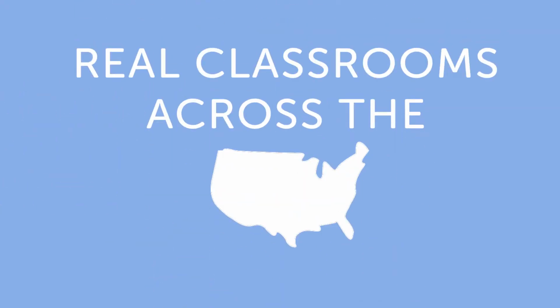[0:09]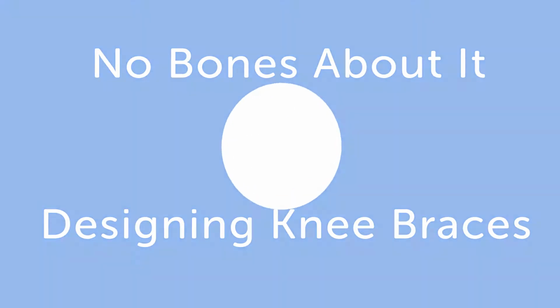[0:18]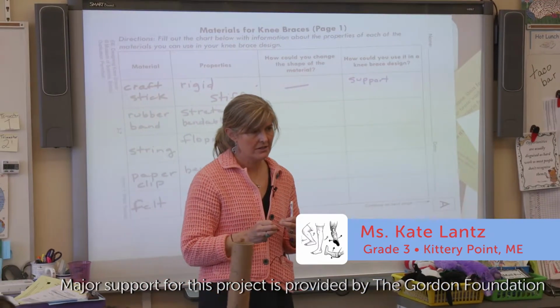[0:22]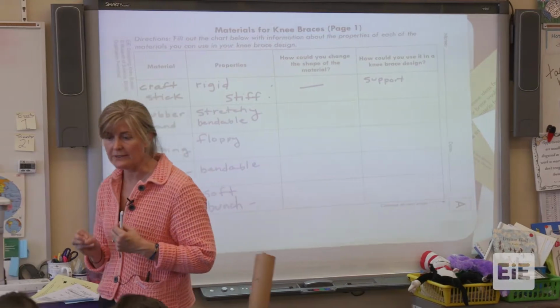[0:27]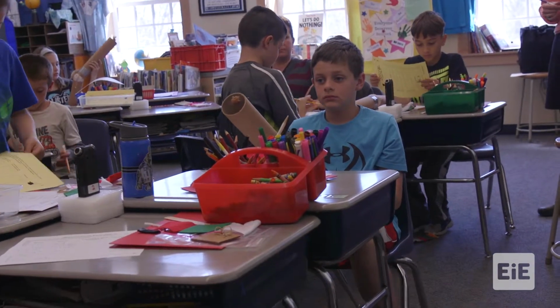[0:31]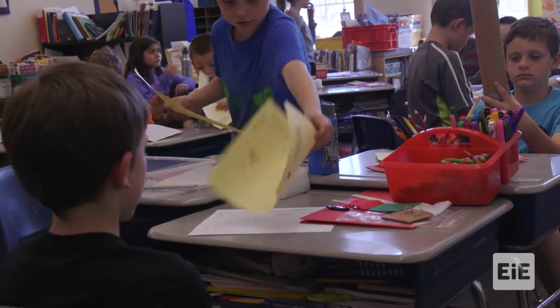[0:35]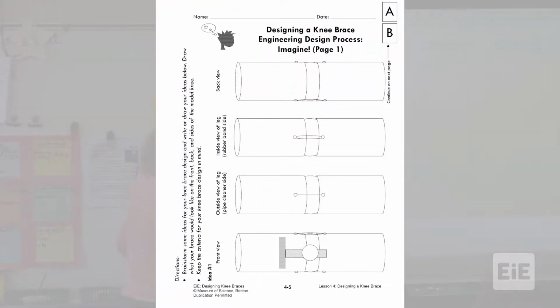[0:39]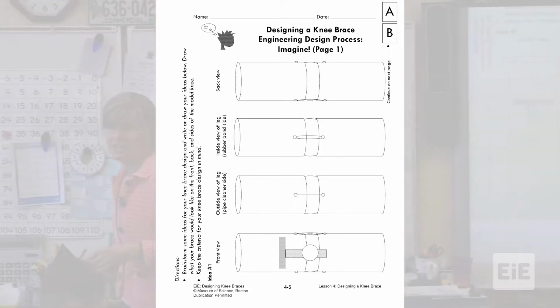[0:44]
We're on to the drawing part of our design. We are not yet at the building part of our design. We've been doing group work and teamwork, and you guys have been doing dynamite, but right now we're going to change it up a little bit. You have this in your bucket. You're going to see different angles of the injured knee.
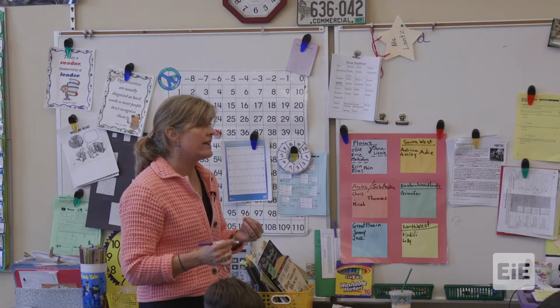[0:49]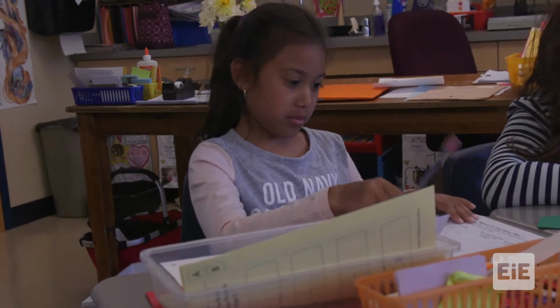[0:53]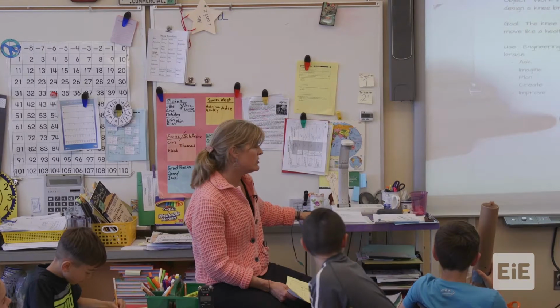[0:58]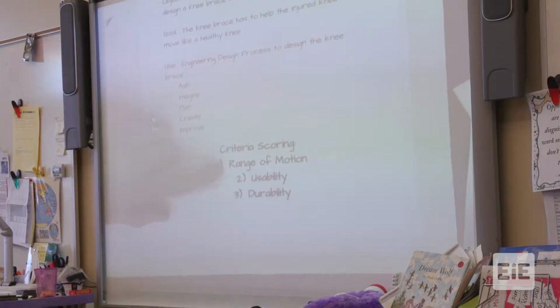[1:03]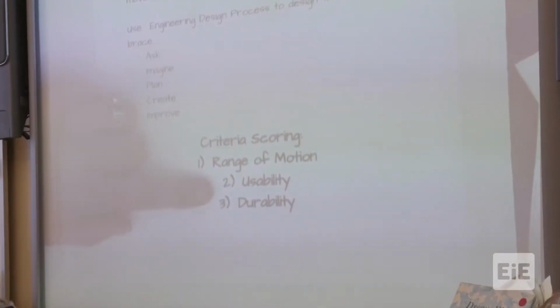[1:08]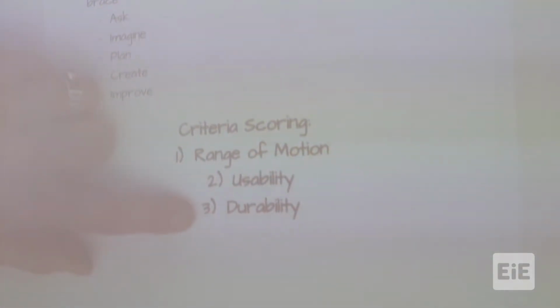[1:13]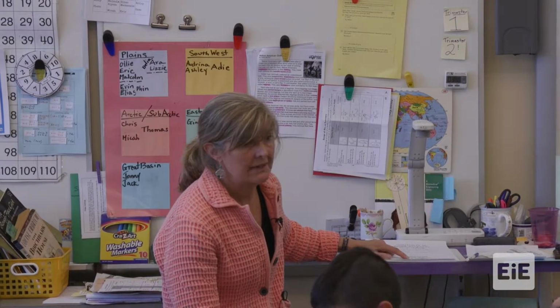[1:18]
What you are asked to do is design, draw your knee brace. You are going to score yourselves on range of motion, usability, durability, okay? Range of motion, is it moving in a healthy way? Usability, can I take it on and off easily? Is it comfortable? Durable, is it going to last day after day each time I put it on? Okay, ready and set, go. Have at it, you guys.
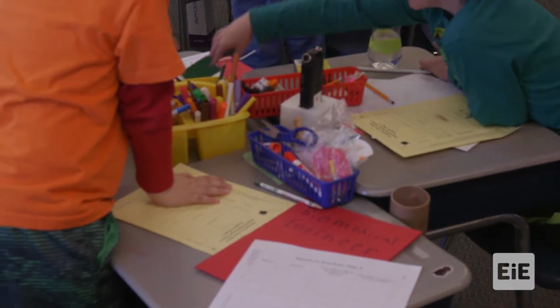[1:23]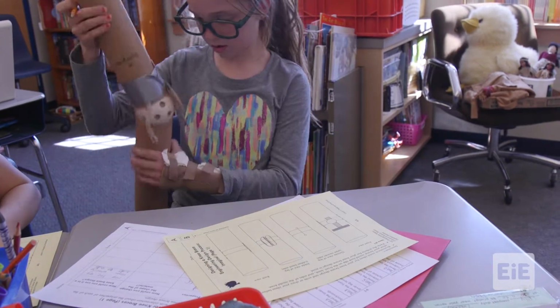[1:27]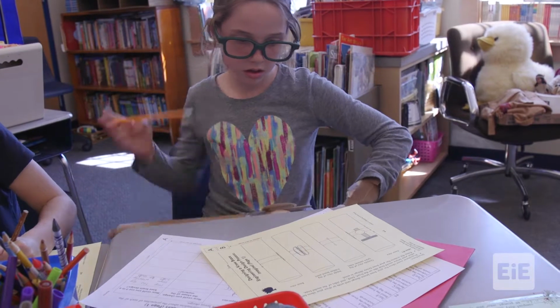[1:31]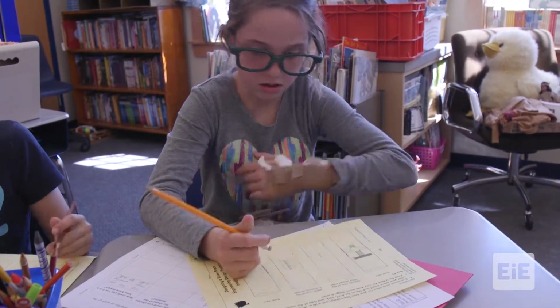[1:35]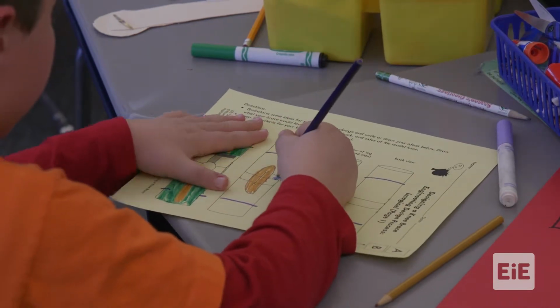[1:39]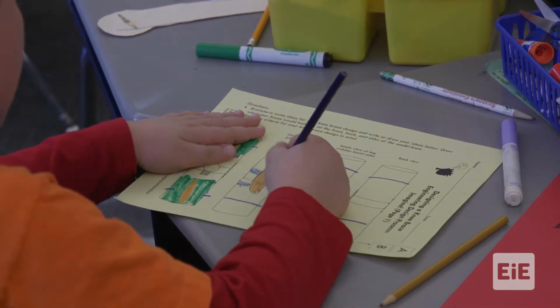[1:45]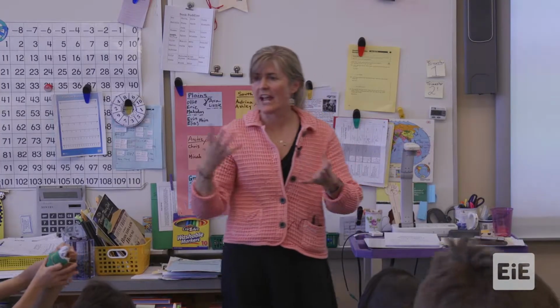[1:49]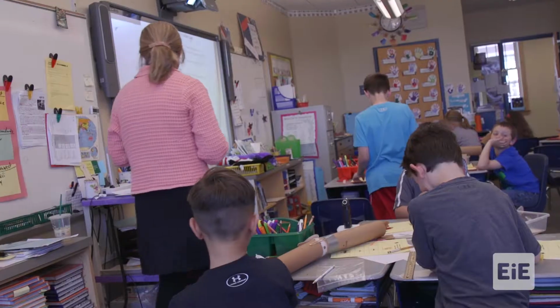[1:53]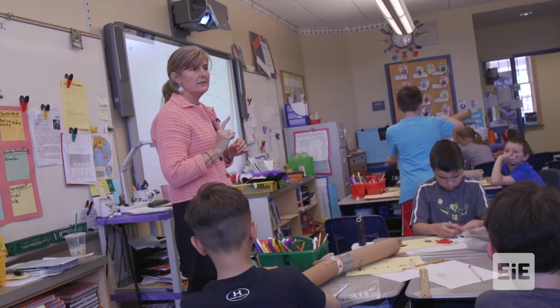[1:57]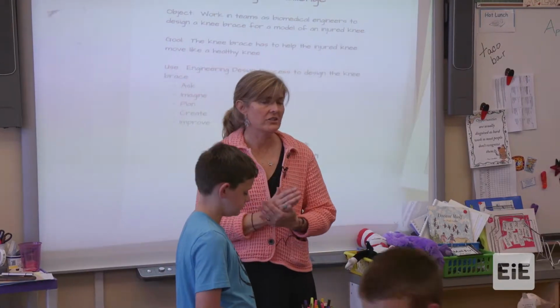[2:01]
It seems as though you're naturally just segueing to this part, okay? So the next step, you want to decide on one design amongst your team. You got 5 minutes. Go ahead, turn and talk.
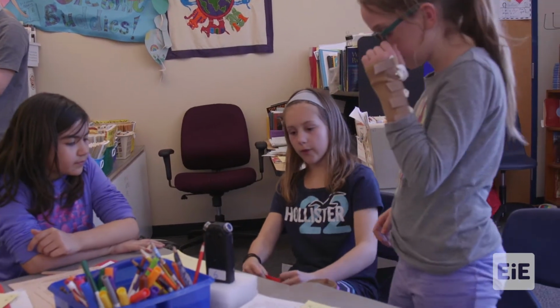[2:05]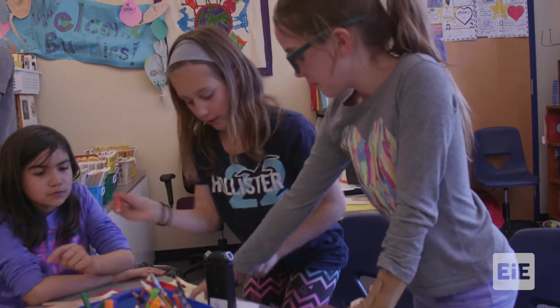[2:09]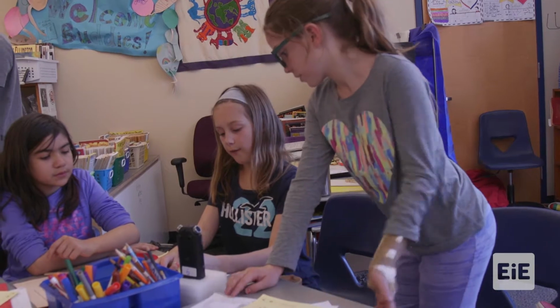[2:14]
Okay, so we should just make felt so it's flexible so it can... Right there. All right. We don't need felt right there. No, we are doing it under for the comfiness.
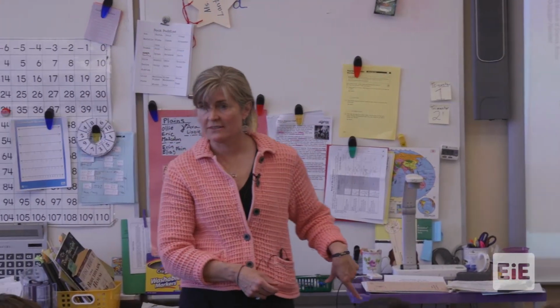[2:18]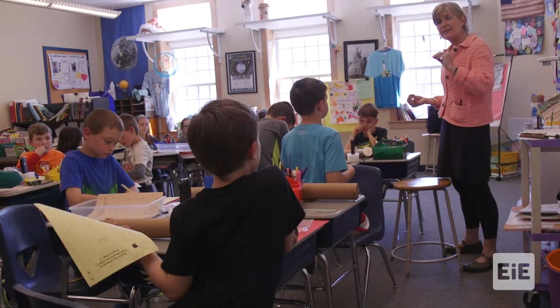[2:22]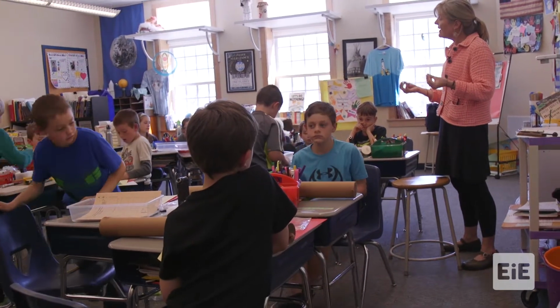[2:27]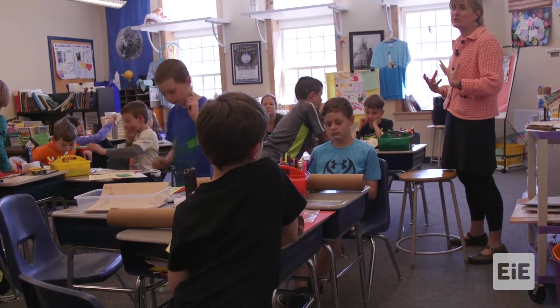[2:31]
Inside your bucket, you're going to find this tan sheet. And this is the planning stage. So you're able to take the best ideas from each of the team members and design, like draw out the knee brace that you think is going to really work tomorrow.
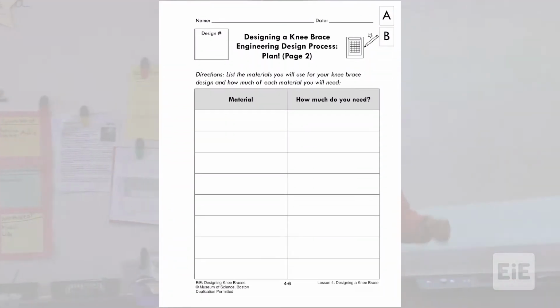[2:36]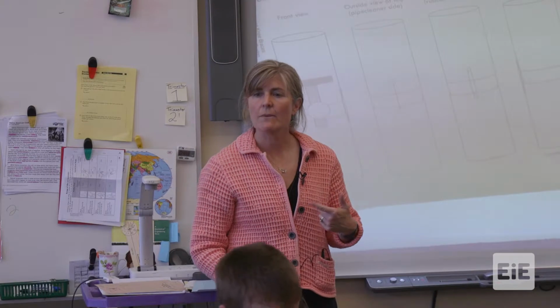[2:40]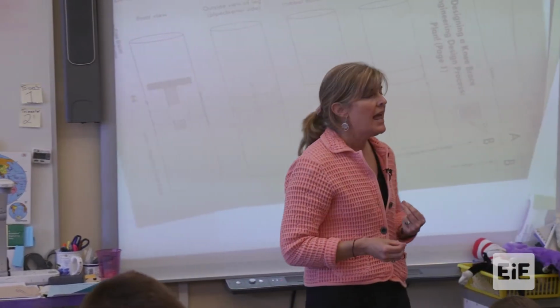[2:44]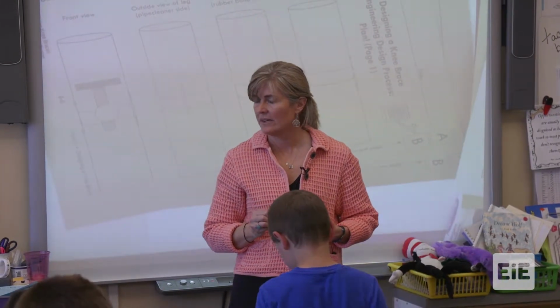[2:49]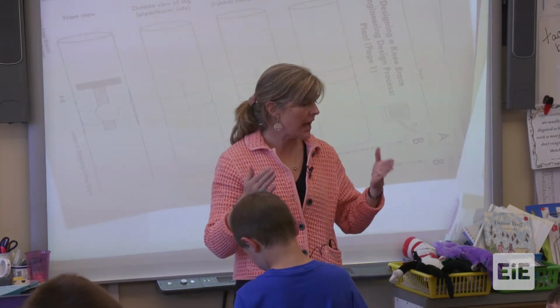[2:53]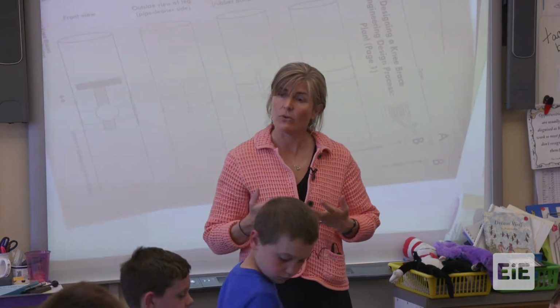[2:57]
The materials list is going to get you thinking about how many pipe cleaners. Do I need 5? Do I need 7? How many rubber bands? How many brass fasteners? Okay? And that material list is really going to be important because we're going to have a store and we're going to hold you to how much you think you need of cardboard, of sticks, and so forth.
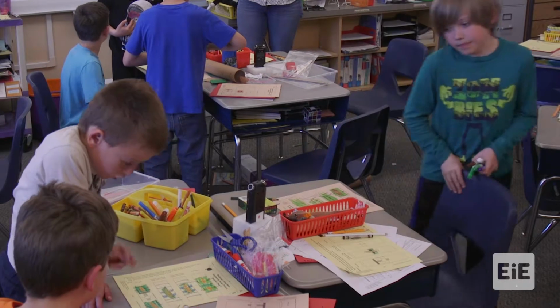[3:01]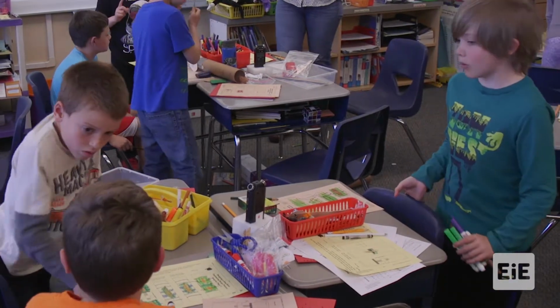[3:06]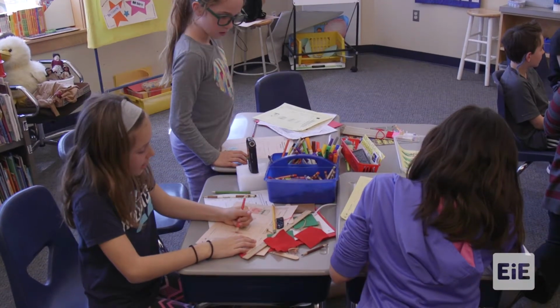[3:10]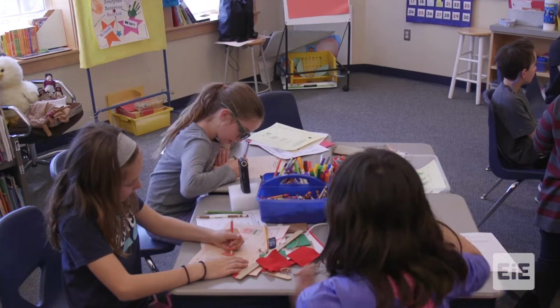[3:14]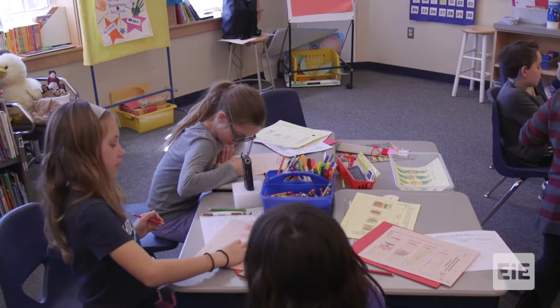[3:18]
So we need 4 popsicle sticks. And we only need... And you guys, do not forget the Velcro. And remember, we should have Velcro like to attach the popsicle stick. Wait, where's the Velcro? Well, it should be over here.
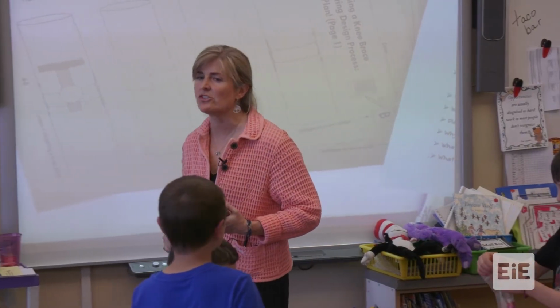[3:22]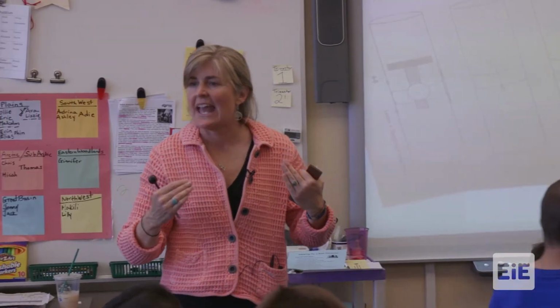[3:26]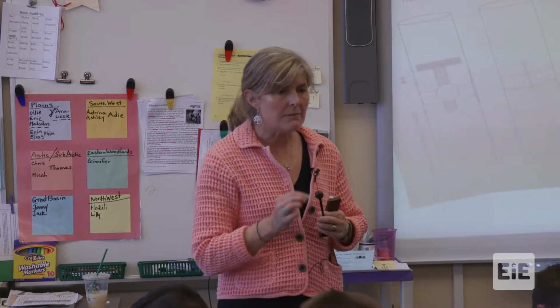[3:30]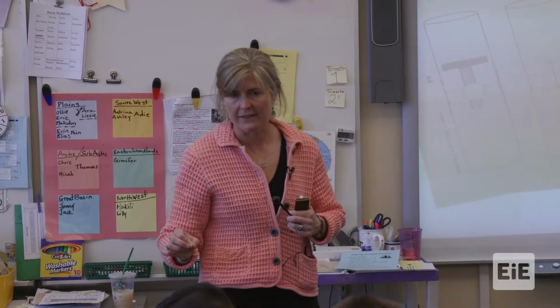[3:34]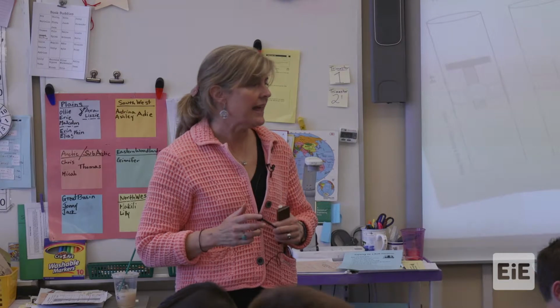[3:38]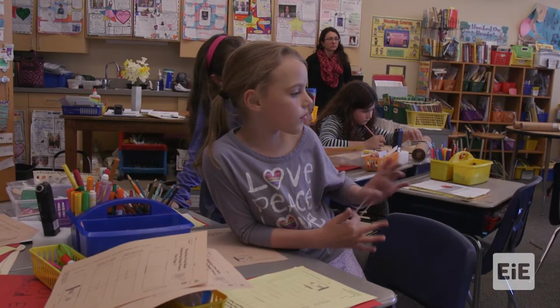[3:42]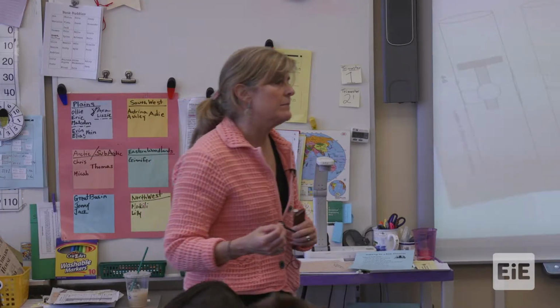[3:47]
See, look over there. You have done such a marvelous job with your designing, imagining it first, now you're planning it, and now you're really thinking about the materials. Well done. Tomorrow, we're going to go back to our blue materials list, and you're going to double check it, okay? And then you get to design what you've just drawn. Think about it tonight, boys and girls.
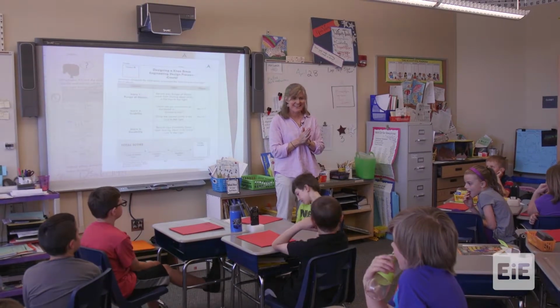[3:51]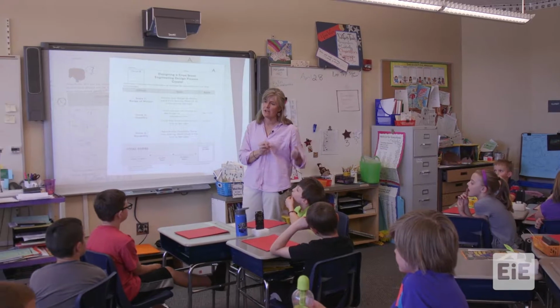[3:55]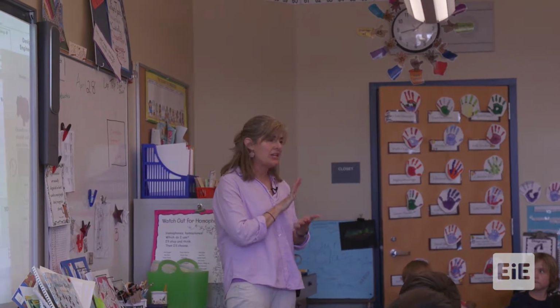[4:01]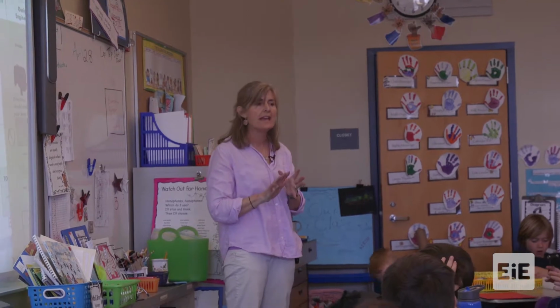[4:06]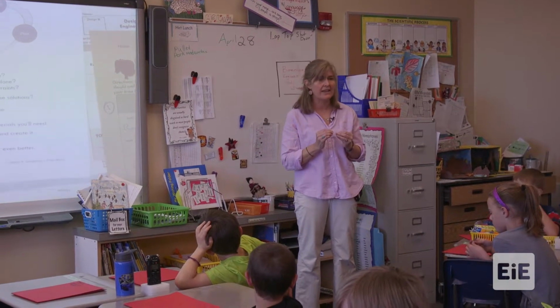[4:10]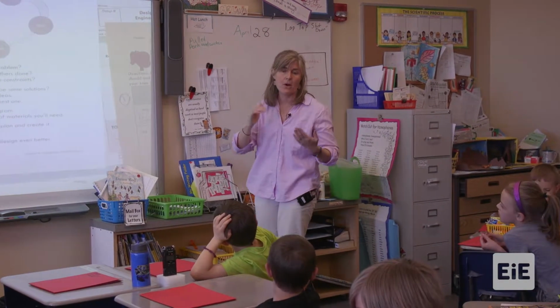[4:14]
All right, so part 2 of lesson 4. This is the big day. This is so exciting to finally be able to put together everything we've learned from Monday, Tuesday, Wednesday, right? And really start designing. Stick with the plan that you agreed to yesterday. Stick with that. Even if you see a mistake, stick with it. And then when you get to the improve section, you'll be able to improve upon it.
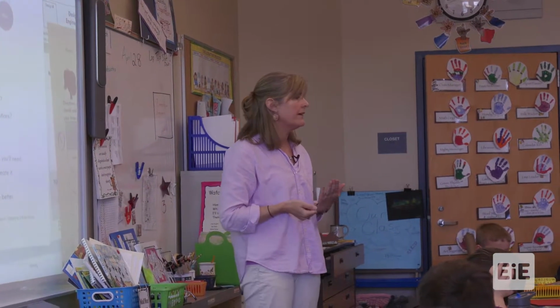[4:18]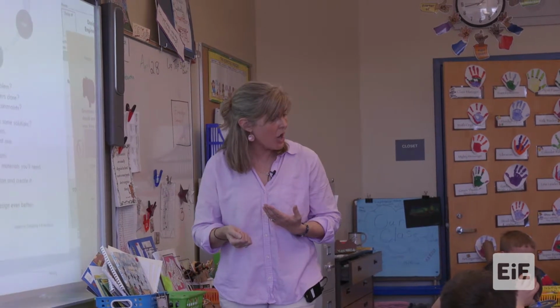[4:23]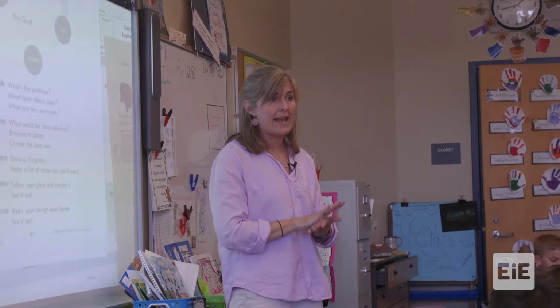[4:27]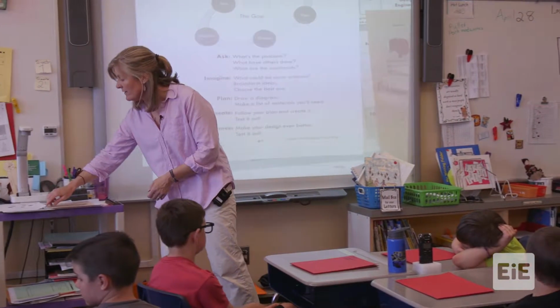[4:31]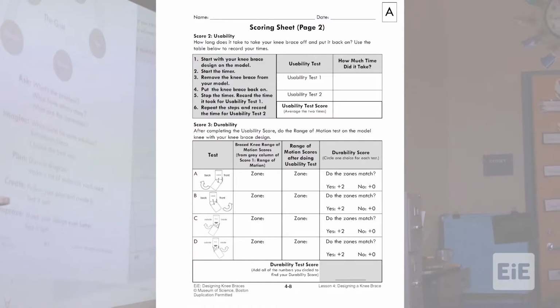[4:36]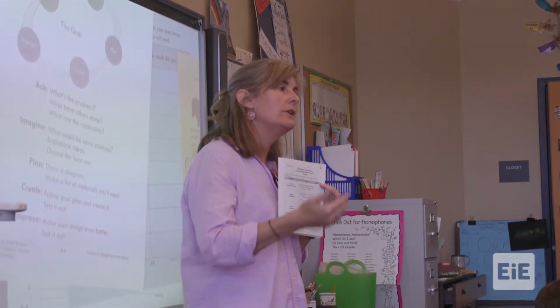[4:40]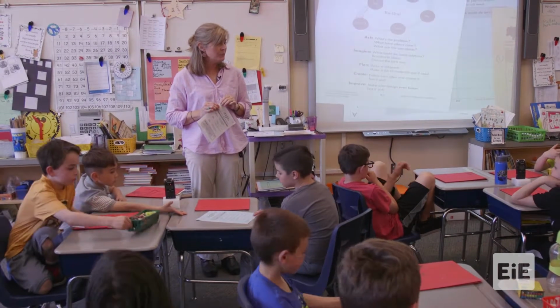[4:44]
Okay? I'm going to ring the bell at various times because that means a team member is ready to test them on the usability. And we agreed 30 seconds or less. So when we go back to that criteria of usability, it's just simple. Is it less than 30 seconds or more? If it's more, we go back to the drawing board. So let's start, please, with the blue materials list, okay?
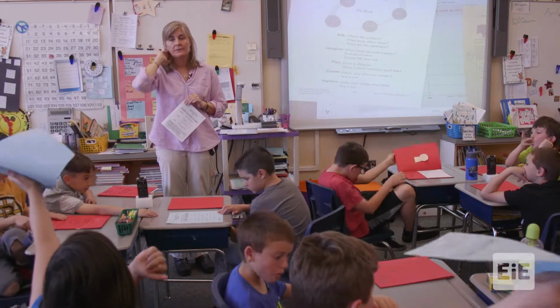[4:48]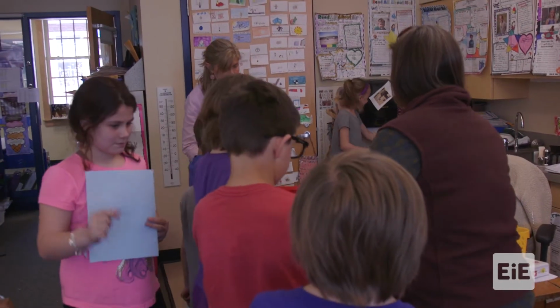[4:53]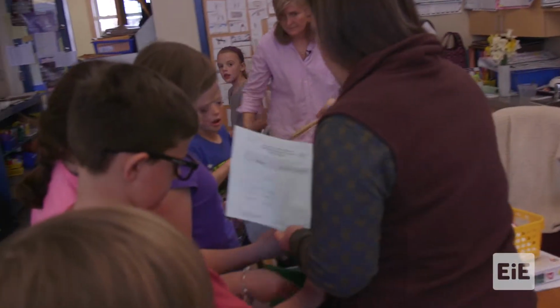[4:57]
Work productively. Six cardboard, 6 craft sticks.
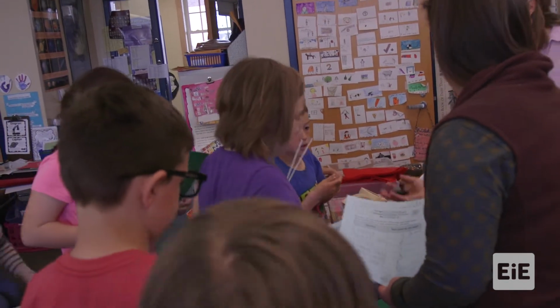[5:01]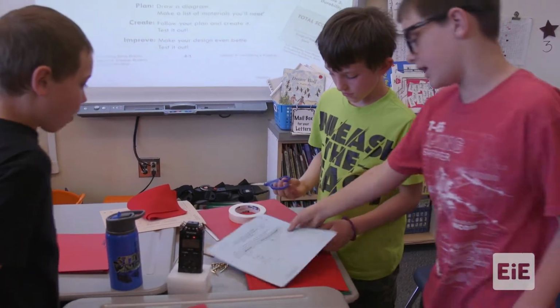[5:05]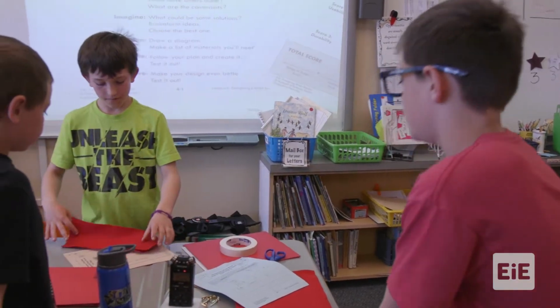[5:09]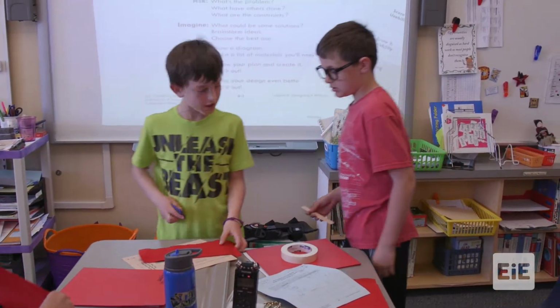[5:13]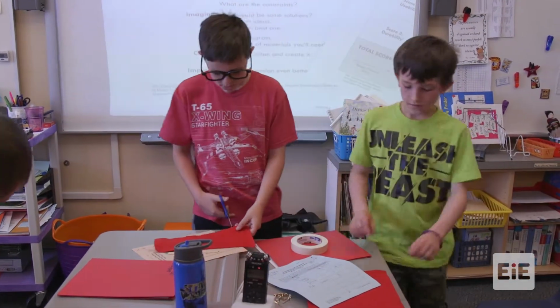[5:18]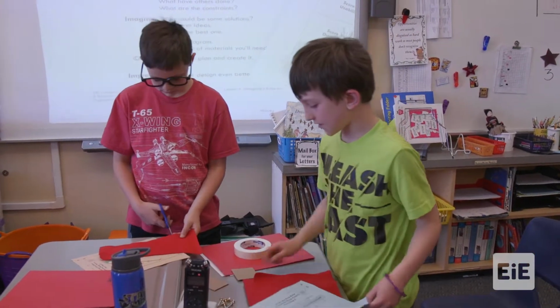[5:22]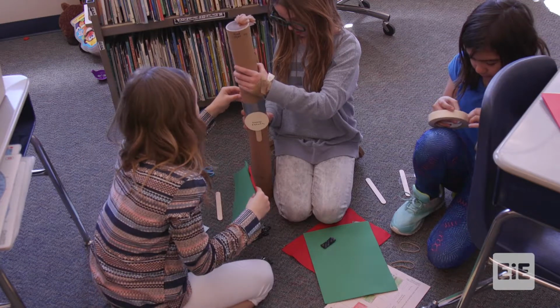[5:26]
I just figured out that we need two to stop the injury. We need two over the cardboard. We need to cut these in the square. We need to cut these right around here. When it comes to big or small? Big. Size of it. Oh yeah, the pockets.
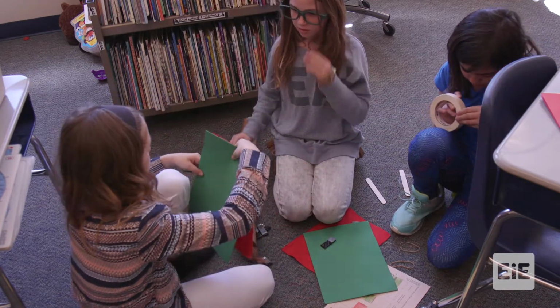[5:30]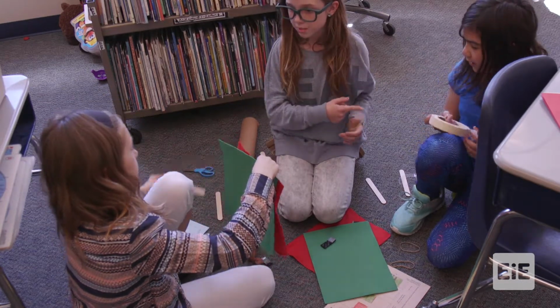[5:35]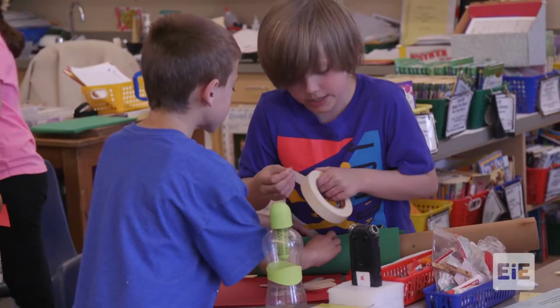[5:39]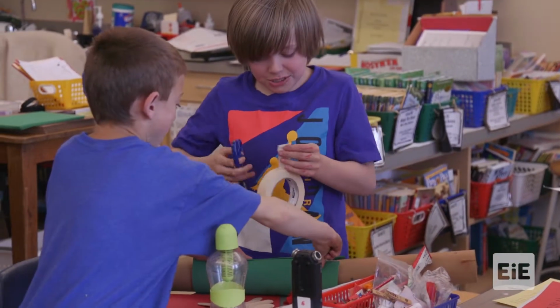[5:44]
We could do it like this. No, but then we would have to mark where they're going. You could have duct tape and make it and stuff. Maybe you could make something with the masking. Can I borrow the scissors? Hold on, I've got an idea. Can I have some scissors? Johnny. Scissors. This is like a surgeon.
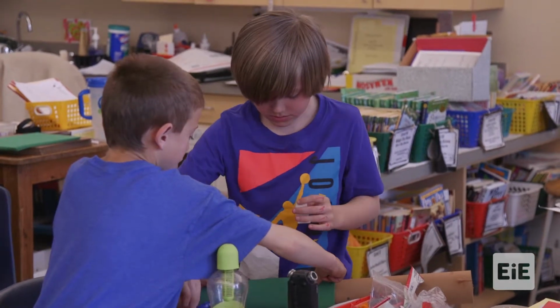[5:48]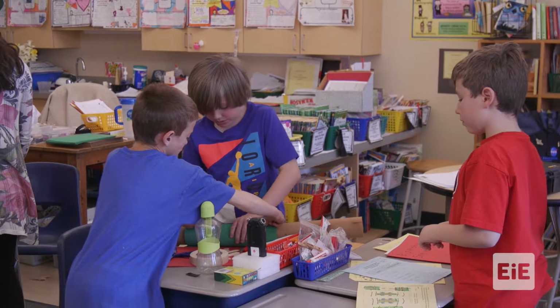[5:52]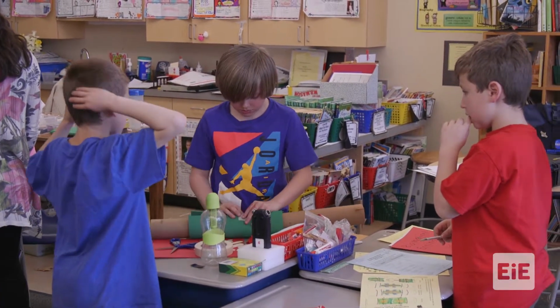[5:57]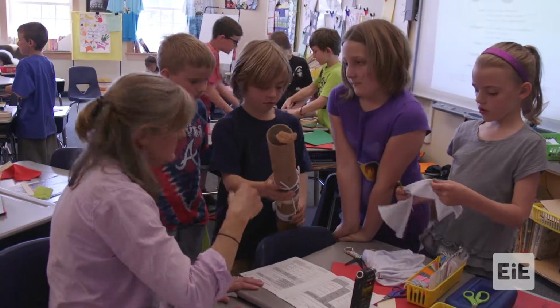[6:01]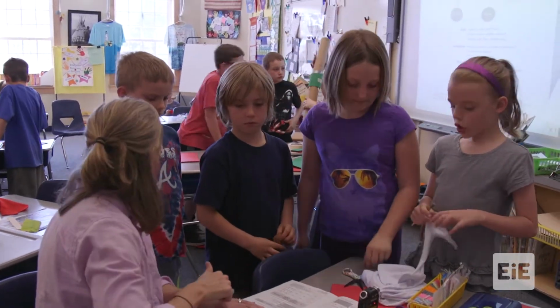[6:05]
We need to be able to slide it on and off really easily. So like this, it's almost like Lily's face. Now, just let go. I want to see if it can slide off. Yep, it can. But it takes a while. It won't take that long. Range of motion, usability, and then down here, durability. Okay?
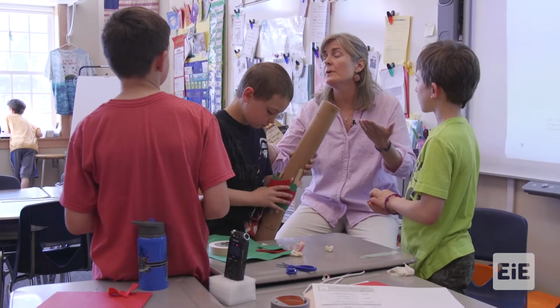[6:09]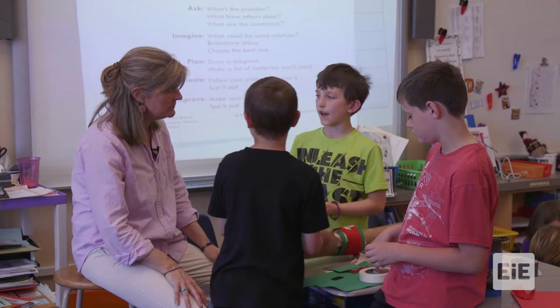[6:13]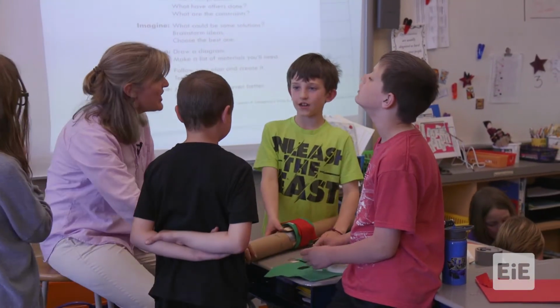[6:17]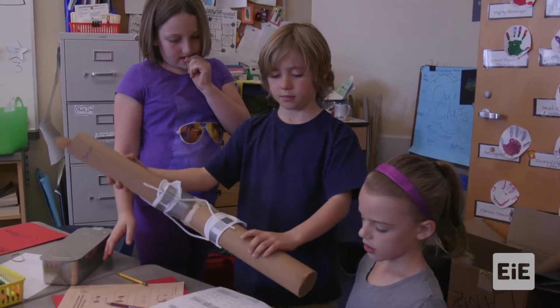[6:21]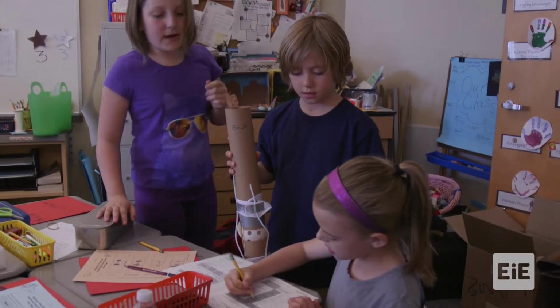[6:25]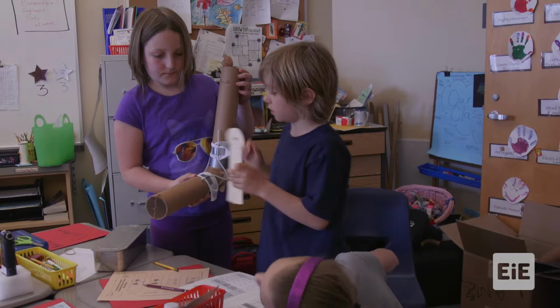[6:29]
Yeah. But maybe that's going to be in your improved time. You know, how can you bring it down? So that's a check. No, how much? How much does it go back? I need to use, well, a goniometer.
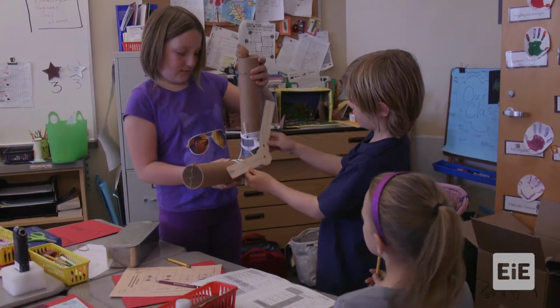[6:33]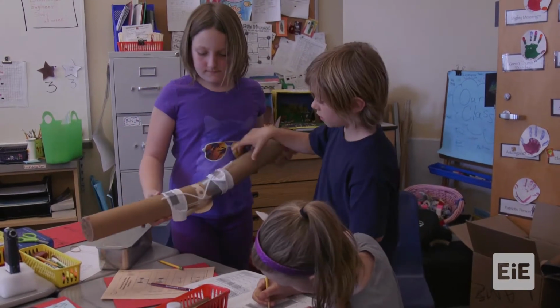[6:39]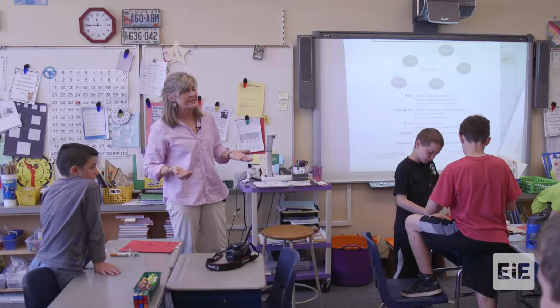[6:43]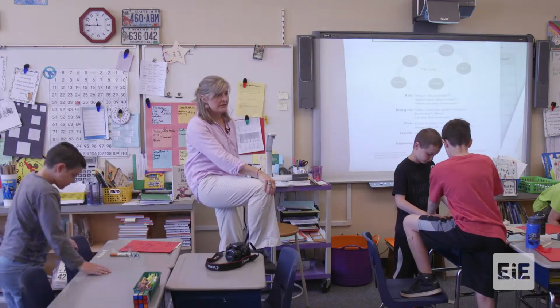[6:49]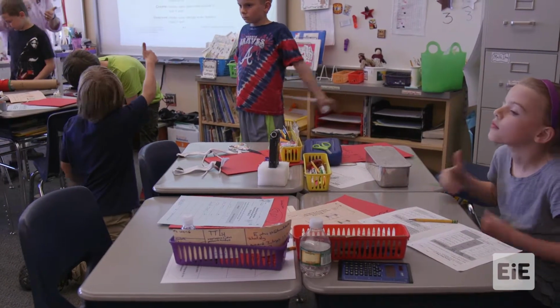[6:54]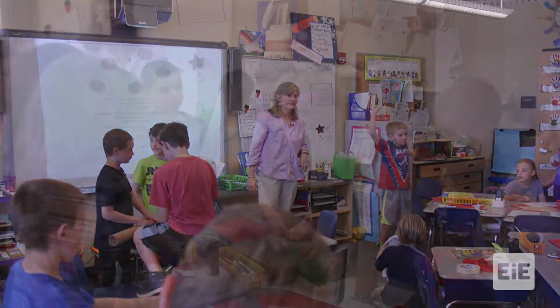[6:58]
We've got a team that's ready for testing. I was just thinking we could test it on the 30 seconds or under. Have you already tested with your goniometer in your range of motion? Is that correct? Give me a thumbs up. Have you done that? Yep. So let's all gather around and watch them, see if they can do it in 30 seconds or under. Are you going to satisfy the under 30 seconds?
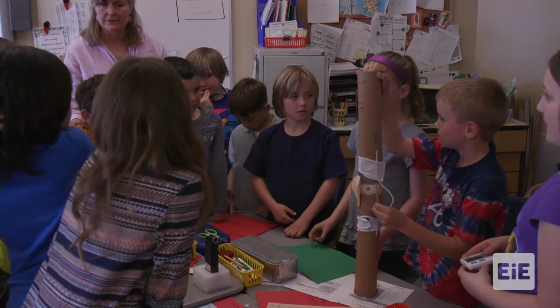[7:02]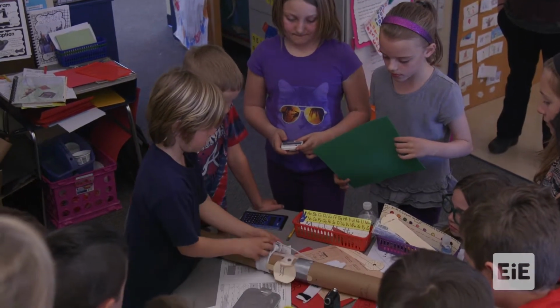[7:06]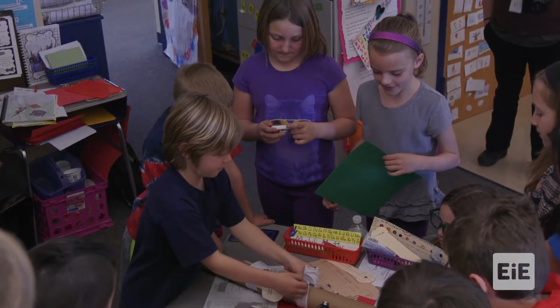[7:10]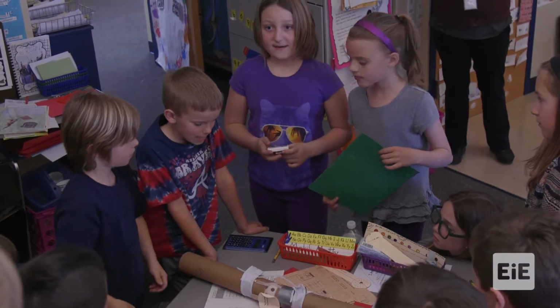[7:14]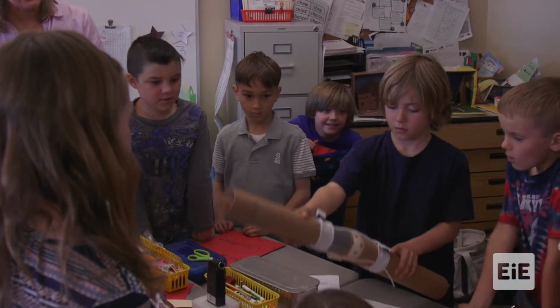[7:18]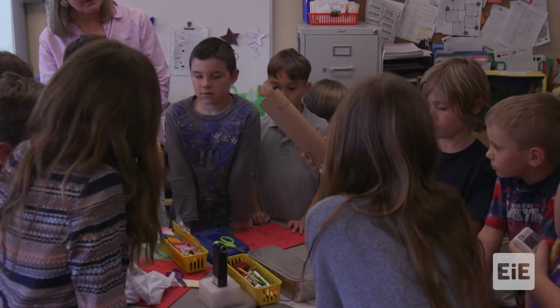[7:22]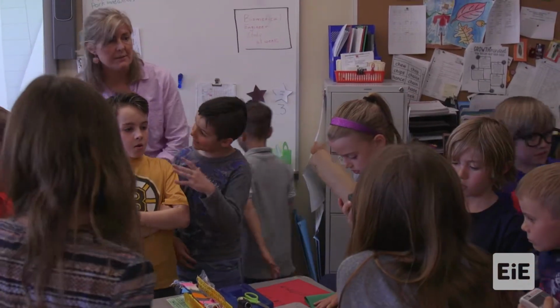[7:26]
Who's got the timer? Ready, all right. Set, go. All the time in the world. 30 seconds is all the time you need. Good. Eight. Yay, 8 seconds. Perfect. 8 seconds. Okay, so you have one place when you go back to the improve part. I think you know where your work needs to be, right?
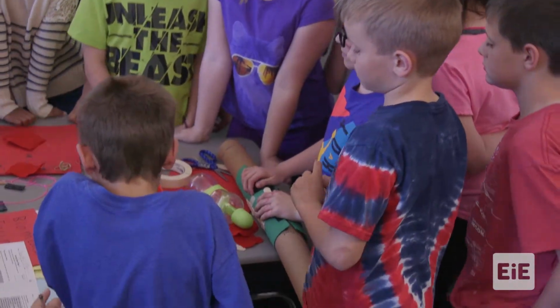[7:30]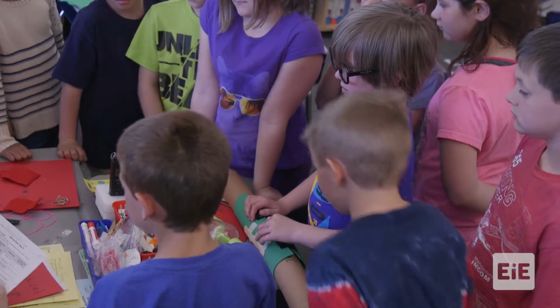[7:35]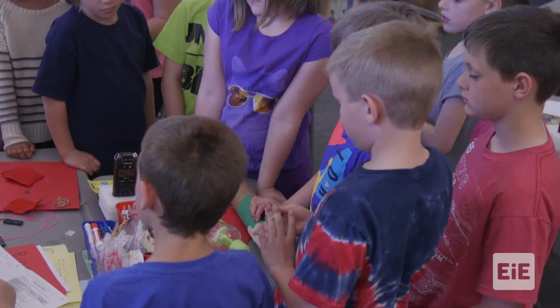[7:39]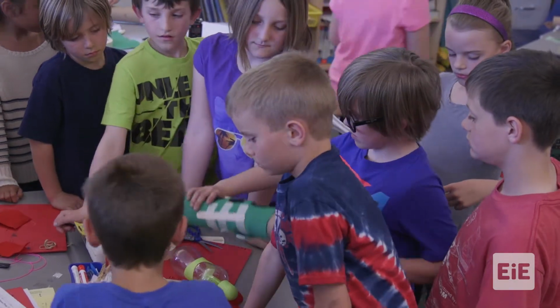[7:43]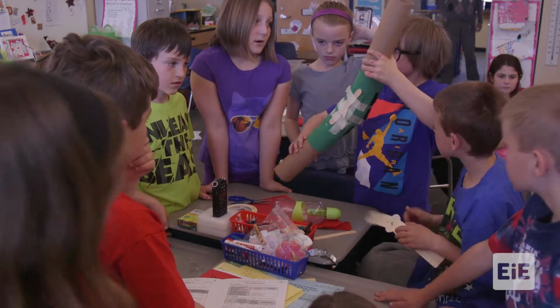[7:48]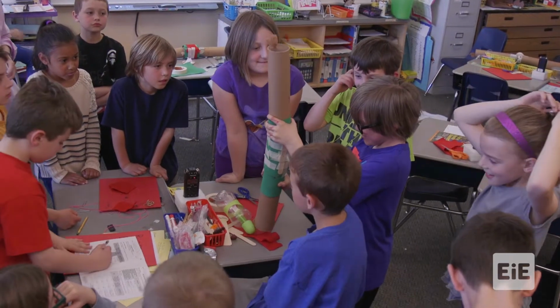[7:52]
Well, Johnny. So Johnny, talk us through it. What are you starting with? We're going to start with range of motion, then usability, and then durability. Sure. Okay. So start with range of motion. You've got four different tests. Let's see what the boys got. One. But you can pick it up a little. Okay. You can't move sideways. Okay. Can't move this way.
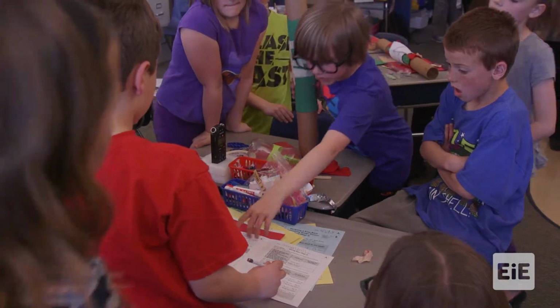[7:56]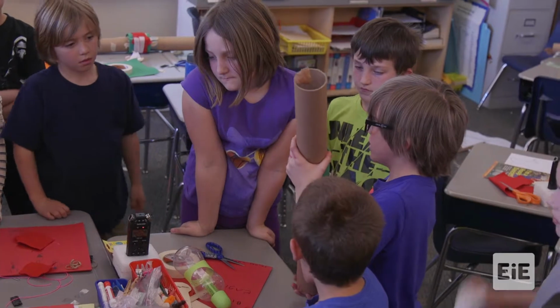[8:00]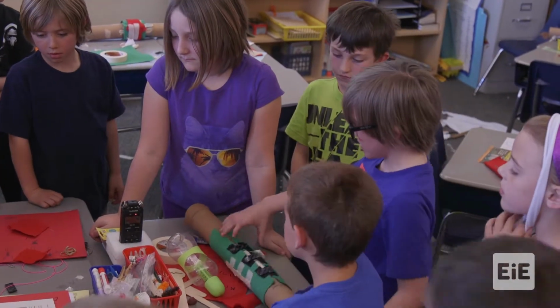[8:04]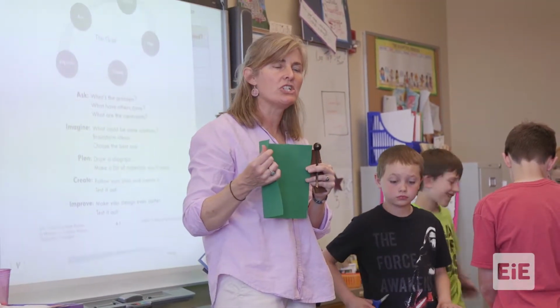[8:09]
It's a little bit. Now, last test, we got two. So you did both? We did all of them, yeah. Pressing it in and pressing it out. Yep. And you had zero and zero? Yeah. Okay. You may leave your brace right on the injured knee. The injured knee will appreciate it.
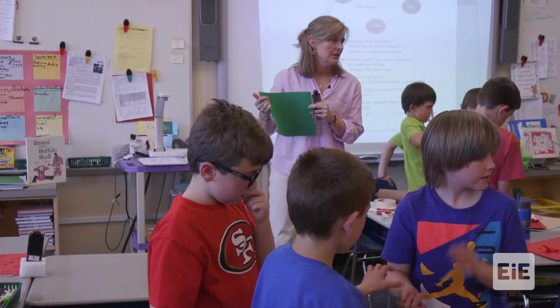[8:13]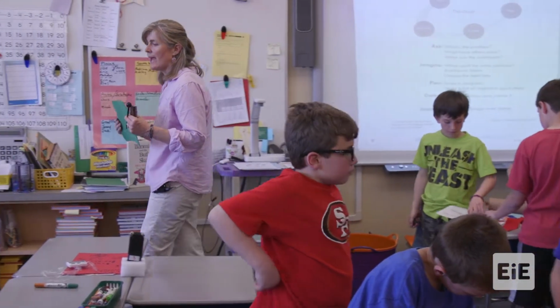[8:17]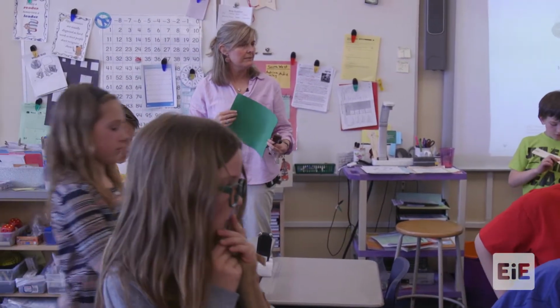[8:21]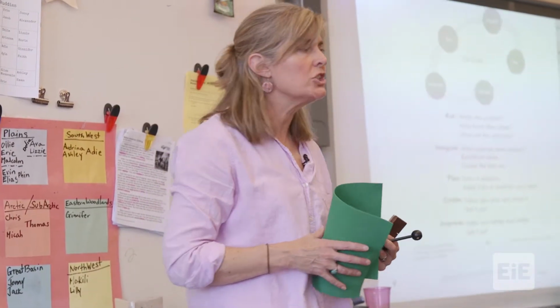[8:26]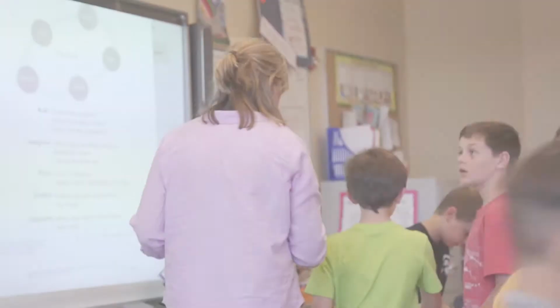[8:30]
Okay? So we are going to wrap it up right now. Great job. Make sure you've got your name. Any extra supplies, put them back over in the store. Okay, and this concludes lesson four. Yeah, we need a way for life. Nice job, to stay in.
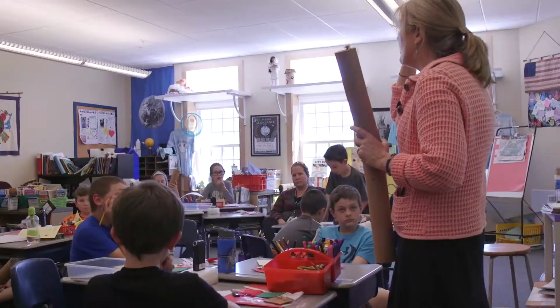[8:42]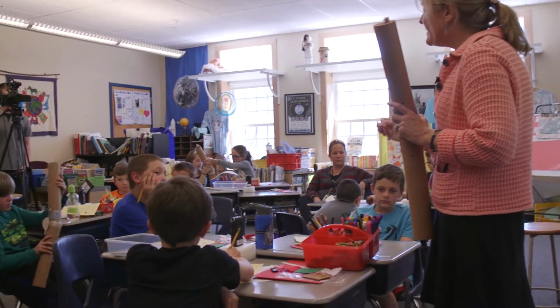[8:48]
There's a lot of investment in the kids, and there's a lot of talk outside of the time that you were here, outside the time that we have just sort of dedicated our day to this. We would talk about it and think about it, and it would come up in different contexts. So then Thursday comes. It's like the big culminating event, is how I see it.
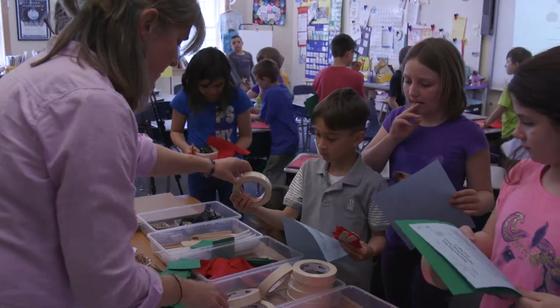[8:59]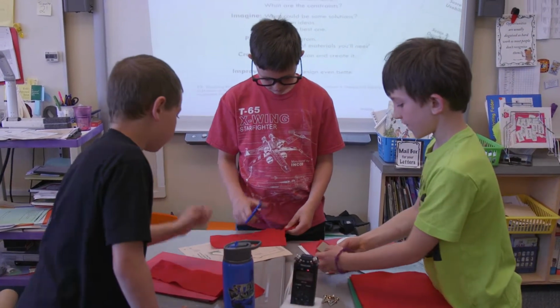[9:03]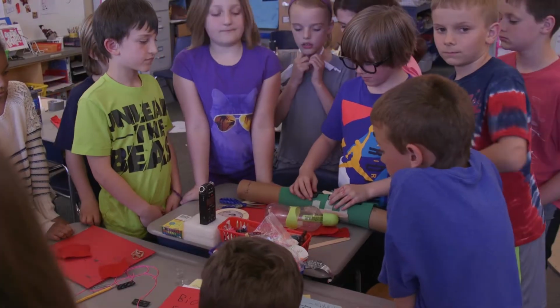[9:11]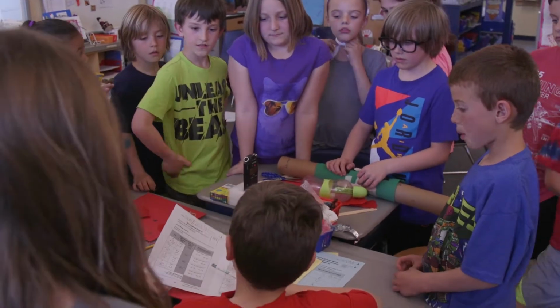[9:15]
And it's like, all right, we know the materials, we've listed it out, and now we get to create. And, you know, about 90 minutes worth of really focused teamwork, collaboration, failure, try again, test it out. My students are engaged and curious and open. So I feel really good about that and providing this opportunity for them.